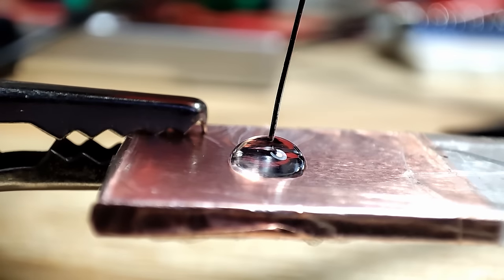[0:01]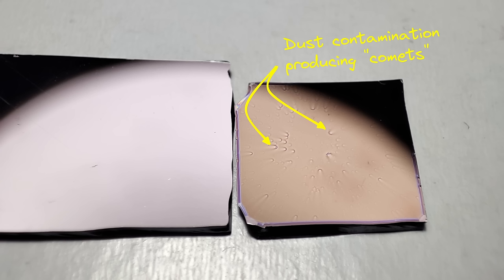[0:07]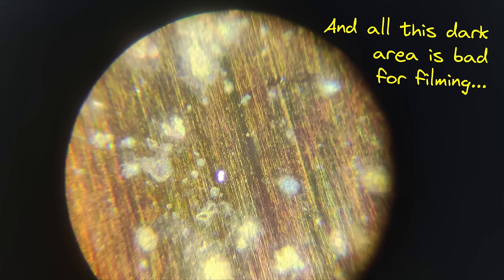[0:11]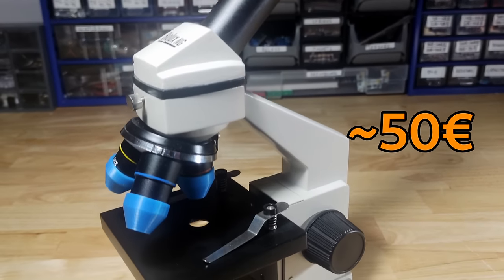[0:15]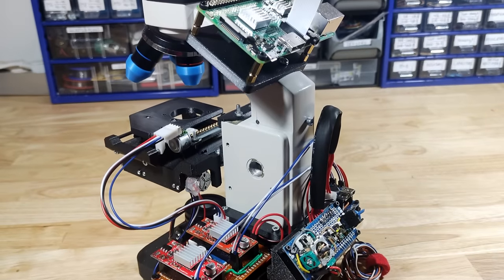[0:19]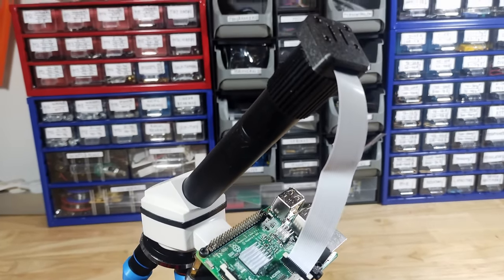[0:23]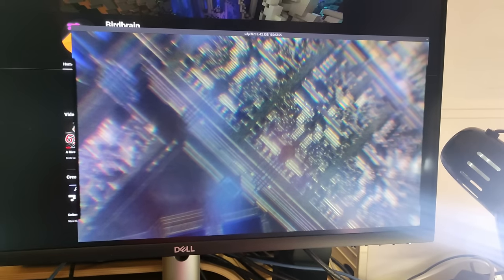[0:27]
While I was recently working on a project to make DIY microfluidic devices, I realized that I needed to make and upgrade some of my tools in the lab. So, in this video, I will be showing you how I turned this old, extremely cheap educational microscope into a DIY upgradable, potentially numerically controllable microscope with a 2K resolution digital camera feed to my PC.
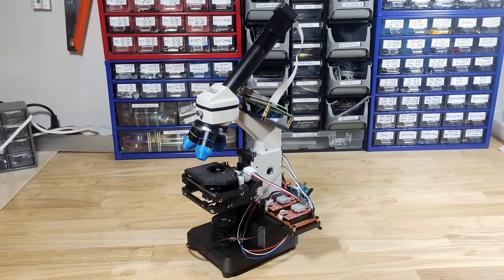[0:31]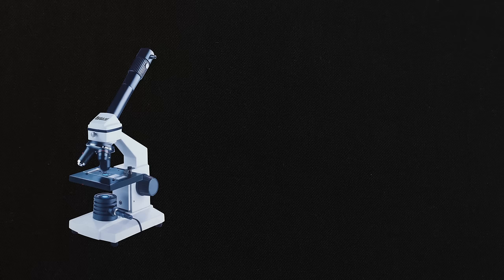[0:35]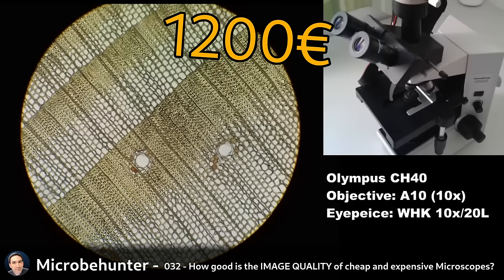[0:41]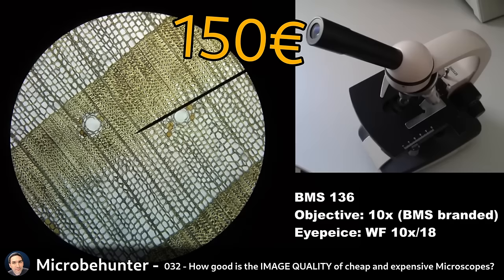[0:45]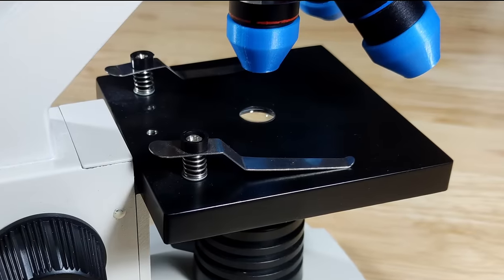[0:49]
Now, it's worth asking whether it's really necessary or beneficial to try to upgrade it. After all, already for many decades, even the cheap educational microscopes are more or less capable of magnifying down to close to the optical limit of about 1000x. In my case though, the problem was the sample stage.
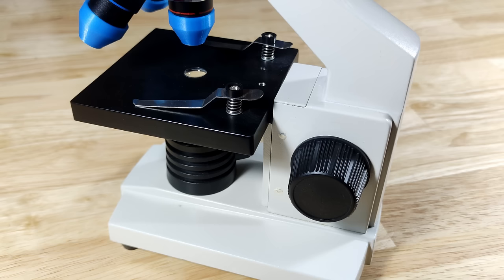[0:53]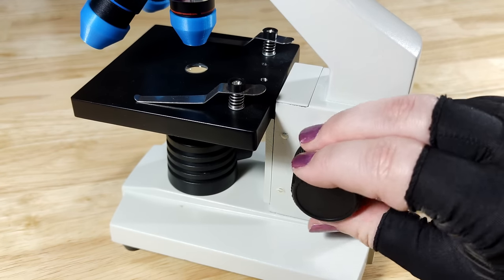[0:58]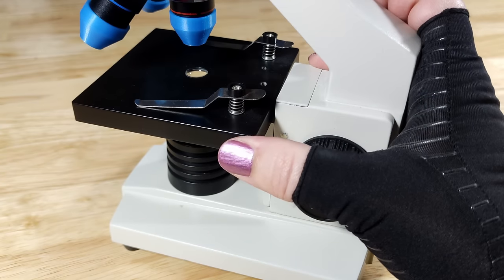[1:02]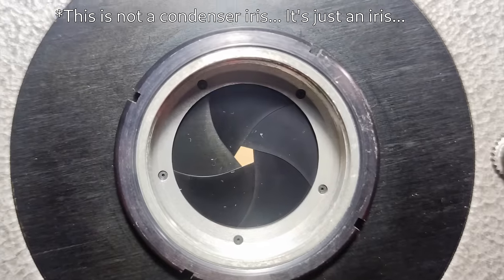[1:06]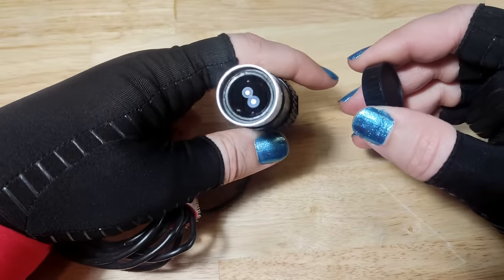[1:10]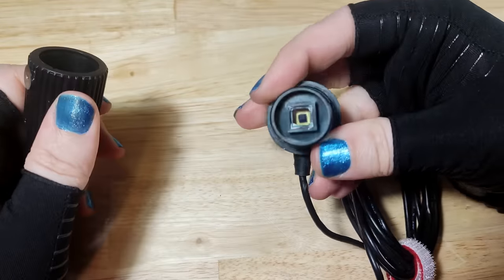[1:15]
It was infuriatingly bad. The Z-axis control only had coarse adjustment with a travel height of only about 2 cm. But worst of all, there was absolutely no X or Y axis control. There was also no condenser iris included, and while there was a camera module, the sensor had a terrible 240p resolution, and the image quality was, in general, shocking. And not in a good way.
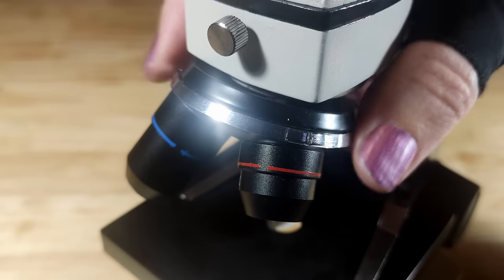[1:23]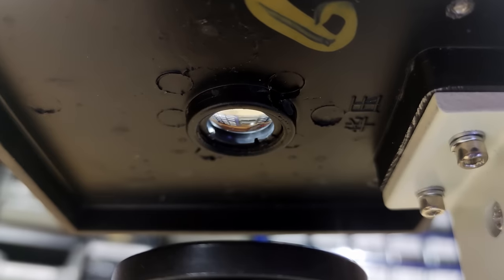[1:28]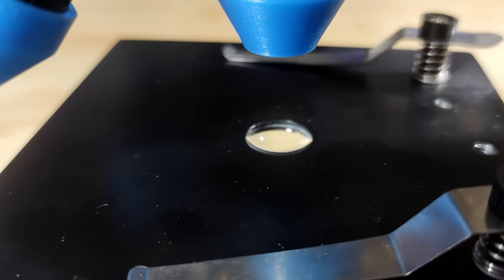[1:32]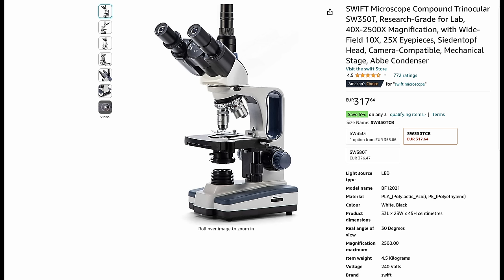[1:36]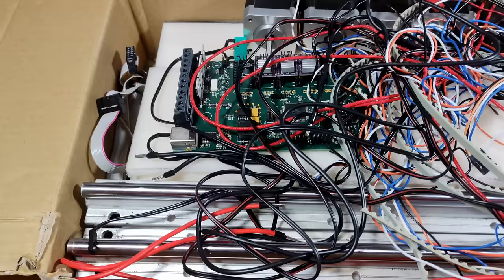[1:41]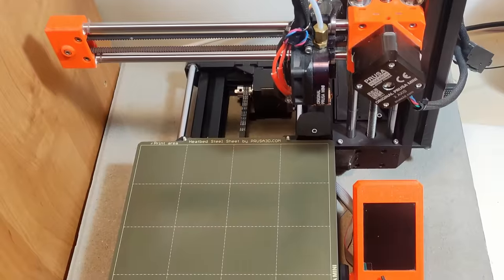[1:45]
At least the microscope had 3 objectives on a carousel and a proper condenser lens, though, as we'll see soon enough, these objectives are also pretty terrible. So, having decided that instead of spending a few hundred euros on a new trinocular microscope, I'd simply use the random junk I have laying about and some 3D printing to upgrade the microscope I already have.
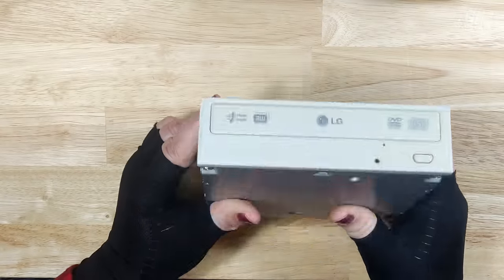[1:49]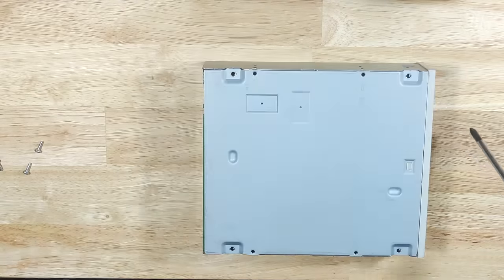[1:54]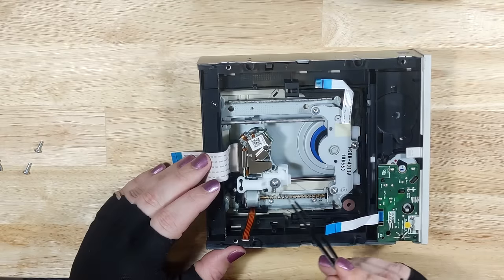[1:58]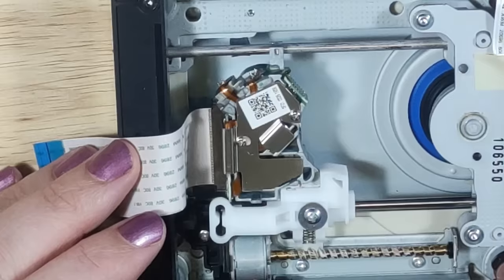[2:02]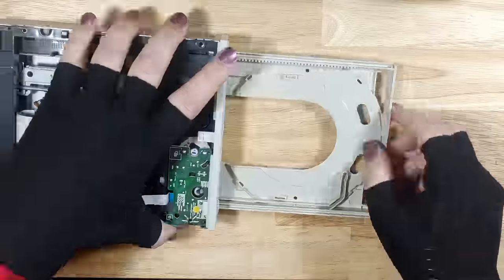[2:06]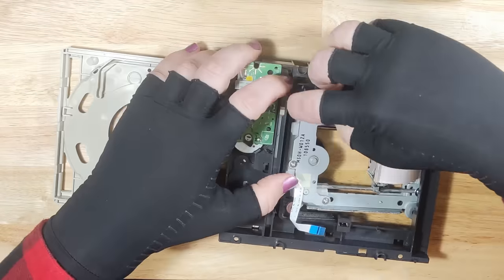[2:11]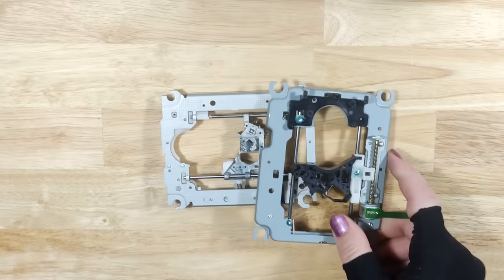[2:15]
I started by opening up an old DVD drive in order to expose a few components I wanted to scavenge. The read head stepper motor, the guide rails, as well as the carriage. I continued disassembling the drive until I was finally able to extract the whole module with all the parts I wanted. I then did exactly the same to a second old DVD drive.
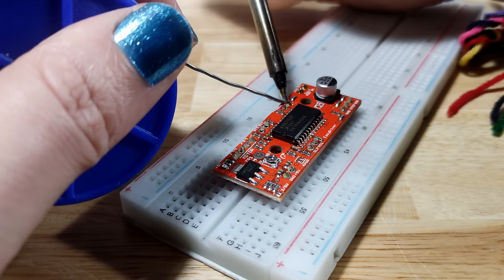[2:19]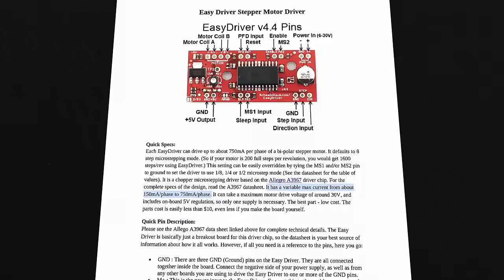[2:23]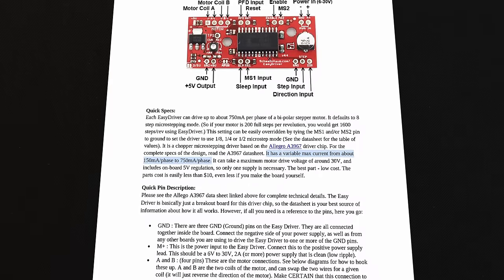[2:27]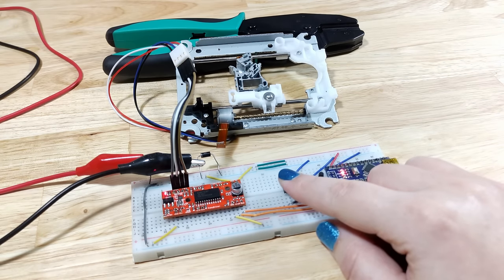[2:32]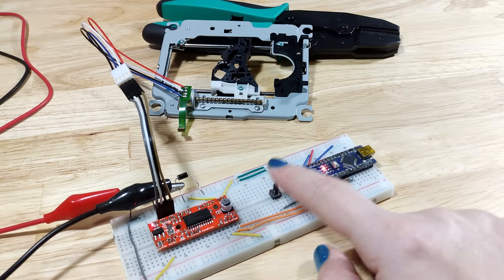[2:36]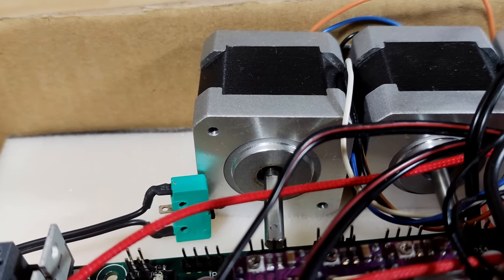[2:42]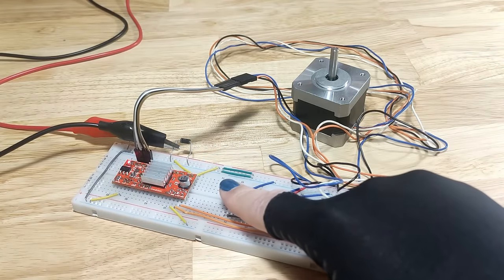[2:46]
Before continuing, I ordered some Easy Driver stepper motor drivers as they allow one to use extremely low current to control the scavenged stepper motors. I then also quickly tested that the drivers and motors actually work, and I was glad to see that both of the scavenged motors worked perfectly. In addition, I tested a NEMA 17 stepper motor I had laying about and wanted to use for the Z-axis. It worked just fine as well.
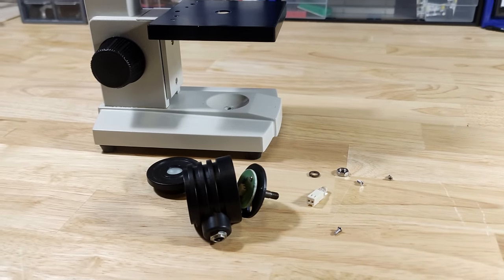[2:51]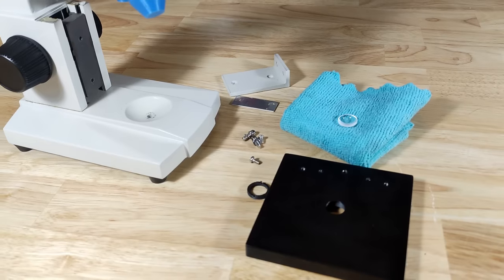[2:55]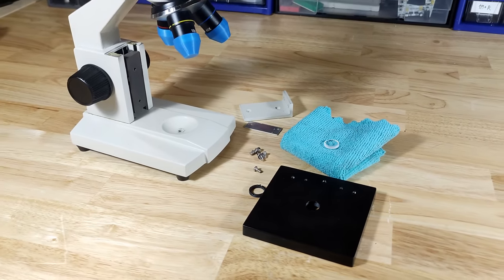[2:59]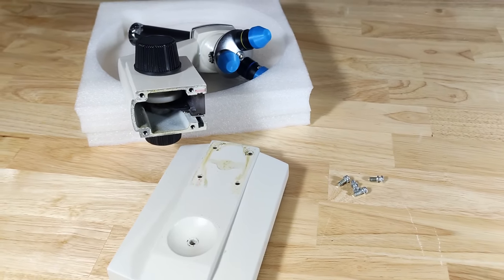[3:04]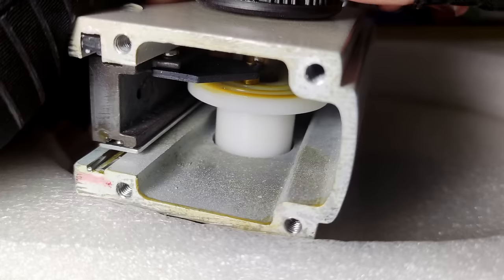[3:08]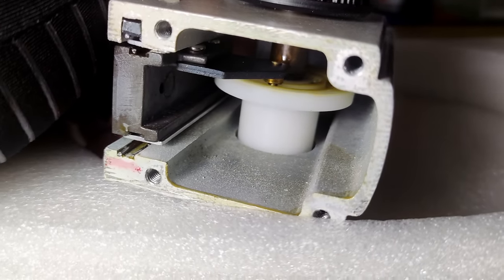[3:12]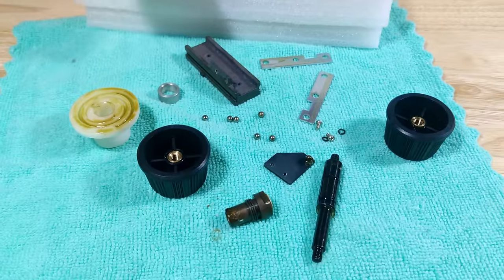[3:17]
Next, it was time to disassemble the microscope. I started with the light fixture and condenser lens, both of which I stored for later use. I then took off the stage and disconnected the body from the base, exposing the Z-axis mechanism. This mechanism, while fairly nice for getting precise movement in a simple package, is rather limited in its travel movement, which was one of the main problems I had with the microscope. So I continued and took apart the whole mechanism.
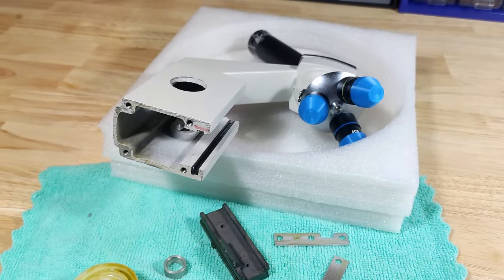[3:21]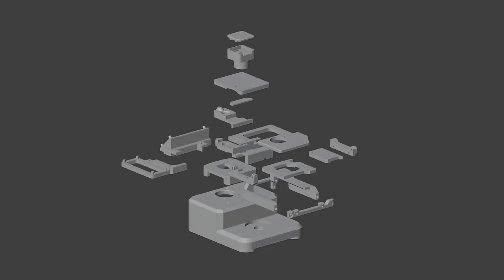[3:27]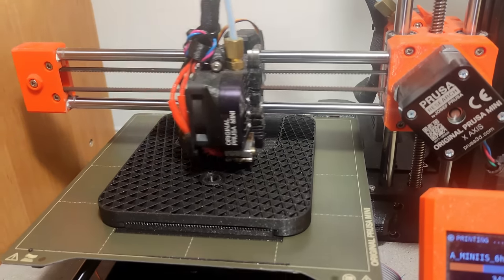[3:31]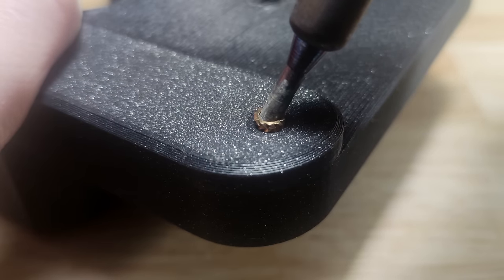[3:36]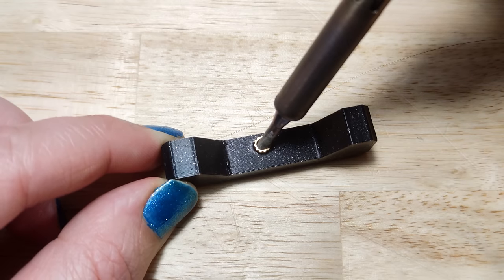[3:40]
At this point, I went on to design how the microscope should look like, work, and what parts needed to be 3D printed. And then, well, I 3D printed the parts. I also designed in the use of some heatset inserts for tighter bonding between the parts, as rigidity is quite crucial for a good functioning stepper stage.
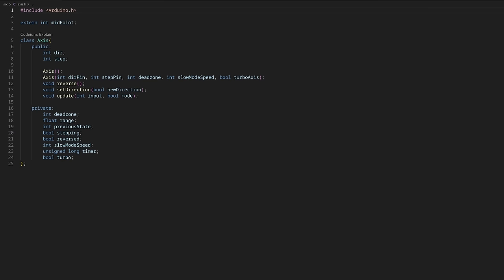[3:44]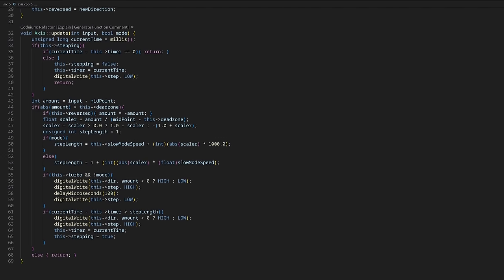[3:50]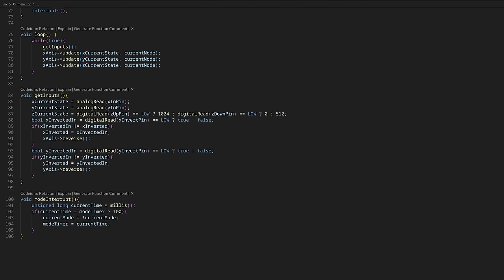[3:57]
Speaking of function, I then wrote some code for an Arduino Nano to be able to actually control the different stepper motors. I spent maybe 2 or 3 hours on this code, so please don't look at it, it's ugly, but it is available on my GitHub.
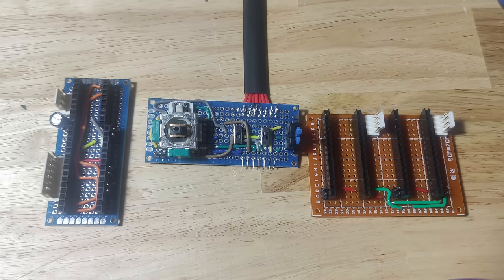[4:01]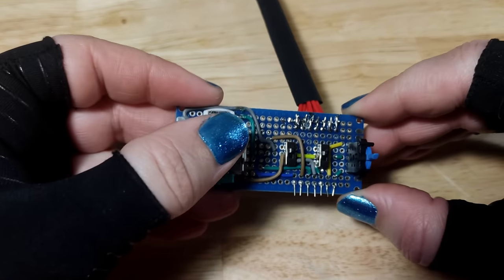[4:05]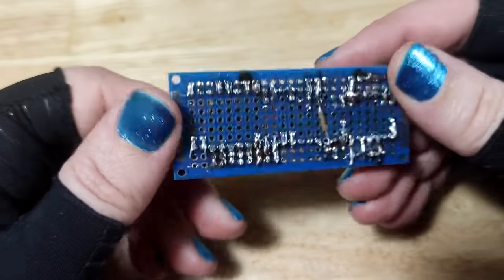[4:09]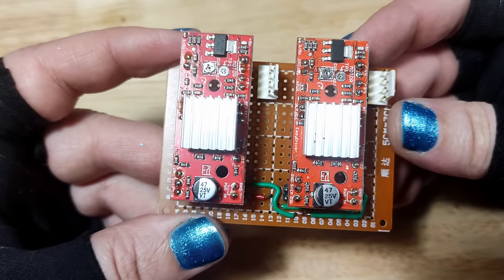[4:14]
I then spent some time soldering up these pieces of horror. A control panel, microcontroller board with the Z-axis driver, and the X and Y axis drivers. At least this time, the device's schematic is rather simple.
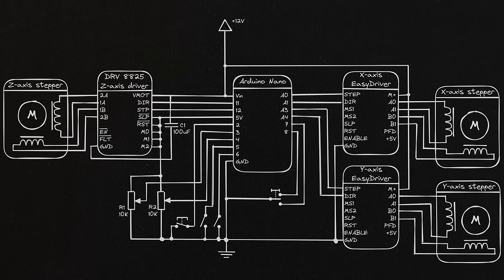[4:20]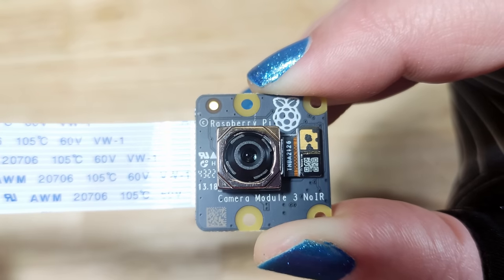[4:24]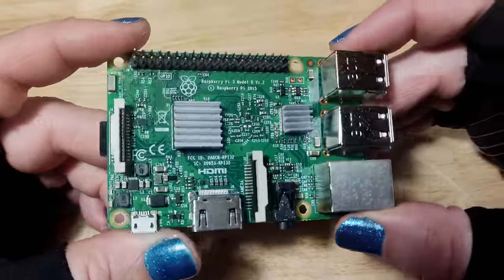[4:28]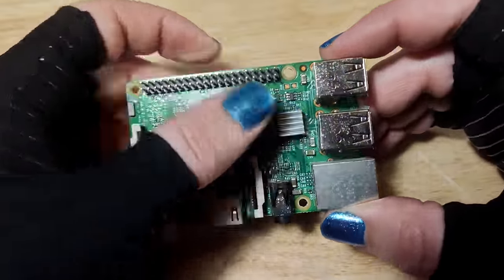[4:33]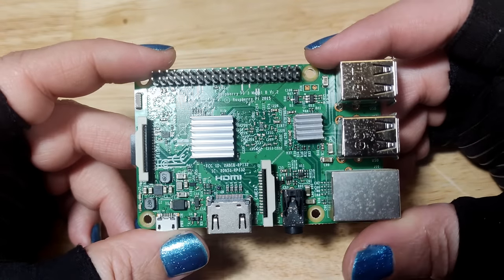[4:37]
Earlier, I also alluded to adding a 2K digital camera, and for that purpose, I got myself this Raspberry Pi Cam 3, which I drive through a Raspberry Pi. The Raspberry Pi also serves to broadcast the image on the local network so that it would be possible to tune in from my PC.
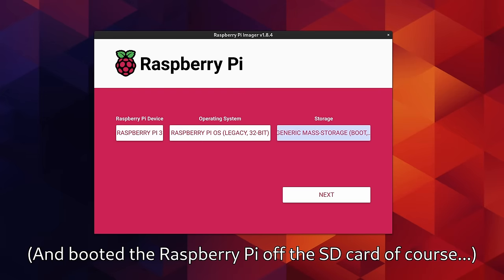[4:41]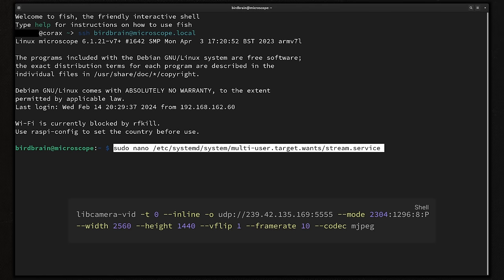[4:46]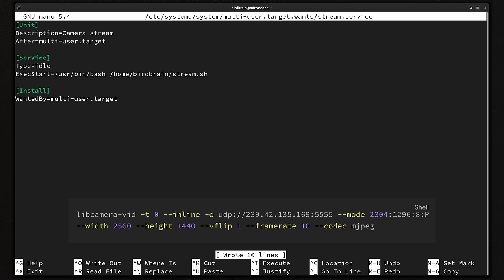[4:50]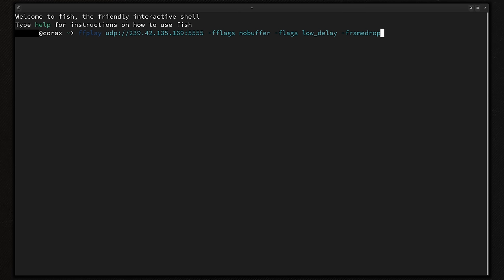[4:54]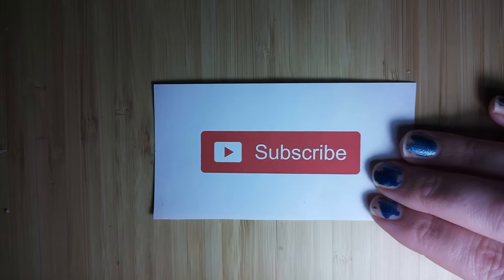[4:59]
To do that, I first installed Raspbian on an SD card. I then made the systemd unit to run the command shown on the screen after booting. So now, as long as the microscope and my PC are on the same local network, I can run this command in a terminal on my PC and it will open up the video stream from the camera.
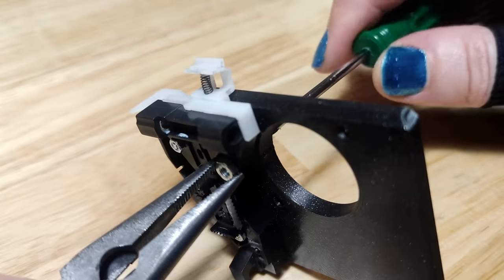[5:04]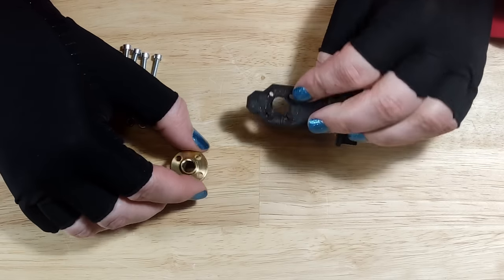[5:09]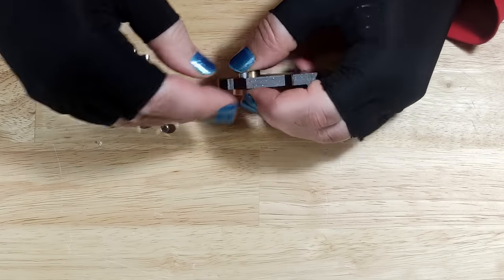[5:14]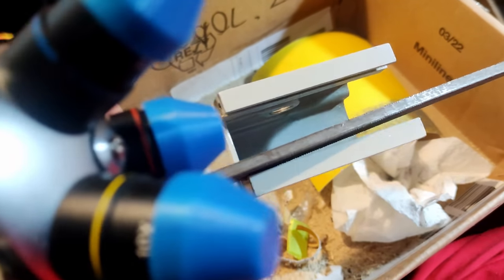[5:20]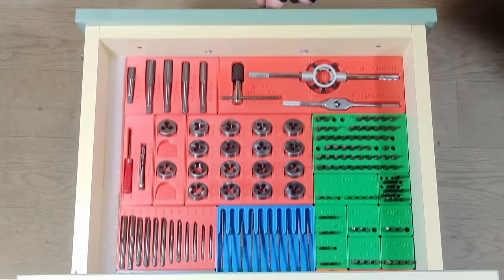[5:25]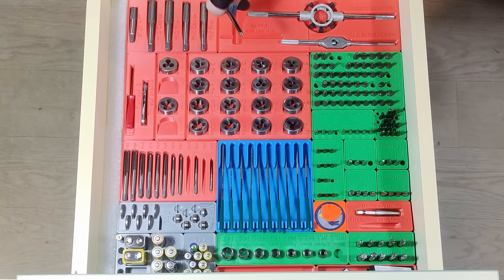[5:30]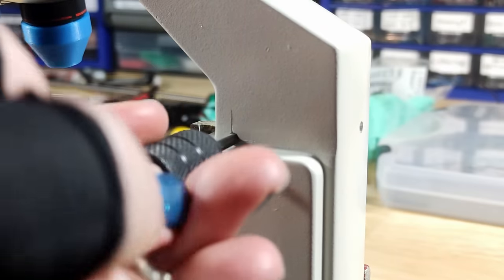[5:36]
At this point, I made some more pre-assembly preparations. I joined some parts. Filed away some excessive metal on the microscope body, as well as drilled and tapped some holes into the microscope body to hold on to some structural pieces. And finally, I also had to cut the lead screw I had to size as well.
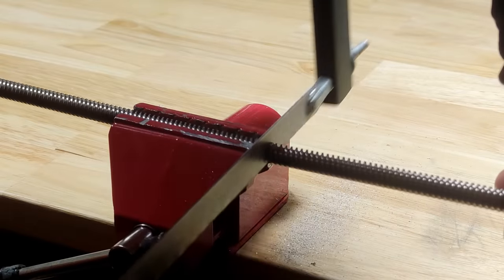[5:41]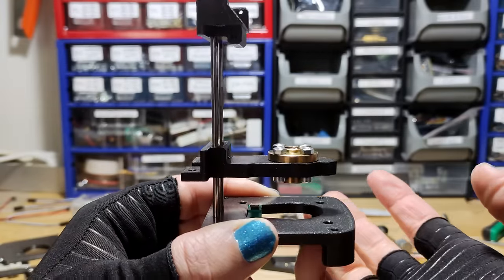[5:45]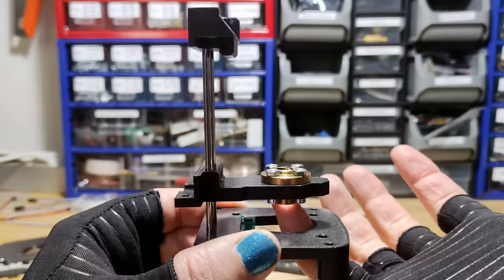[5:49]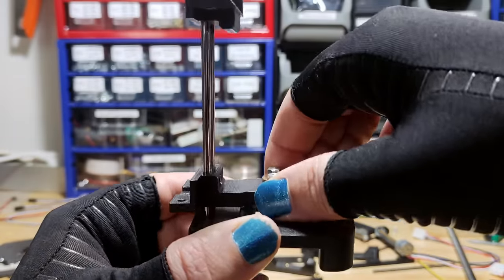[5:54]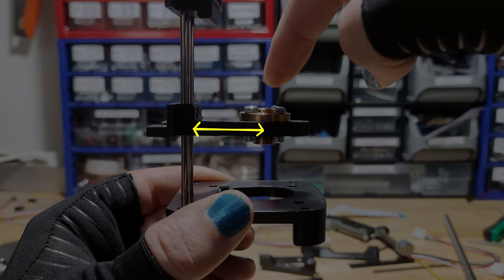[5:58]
At this point, I figured I'd test out how well the Z-axis would work. And, yeah, this is a problem. The Z-axis really did not work. See, I had hoped that the Z-axis guide rails were close enough to the lead screw so that any torque generated on the Z-axis carriage by the lead screw would not really be an issue. I was obviously wrong, though.
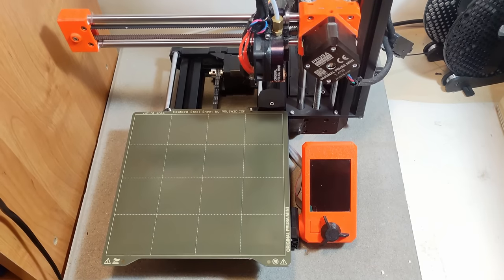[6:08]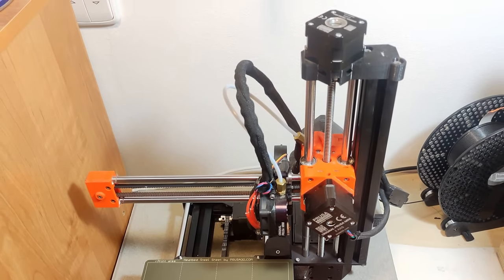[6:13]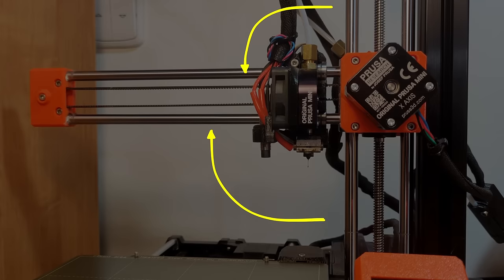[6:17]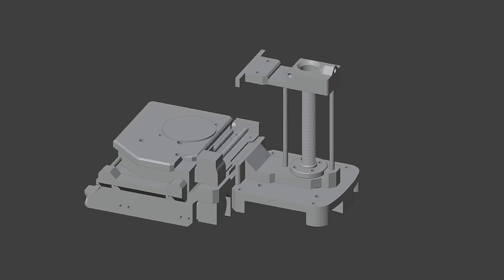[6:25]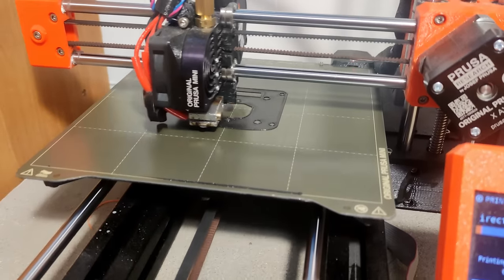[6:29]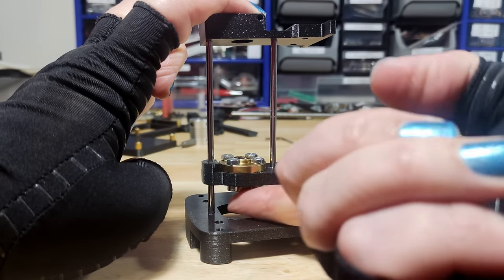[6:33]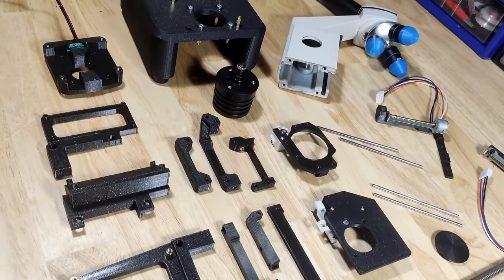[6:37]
So, I did what I should have done from the beginning and looked at my 3D printer to see how it's done properly. As you can see here, the lead screw and the guide rails are in line with the axis of highest torque. In addition, the lead screw is in between the guide rails. So, I transferred this design to my microscope's design, reprinted some stuff, and this time the design seemed to work just fine. Now, I was finally ready to start assembling the microscope.
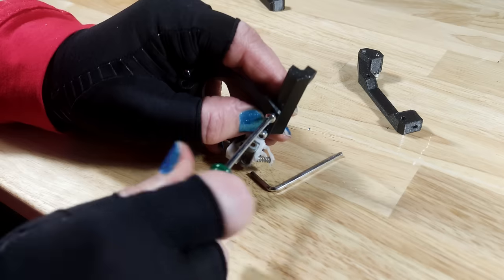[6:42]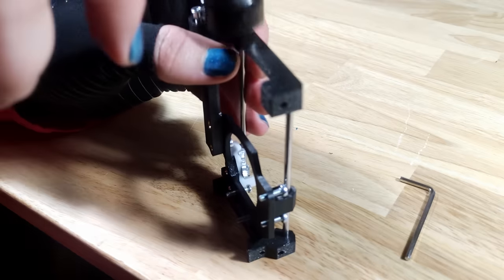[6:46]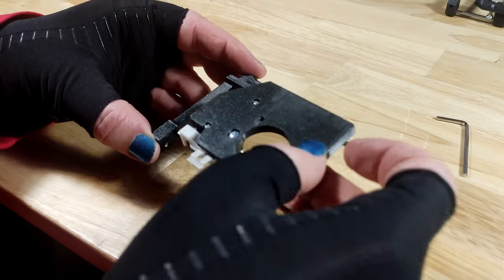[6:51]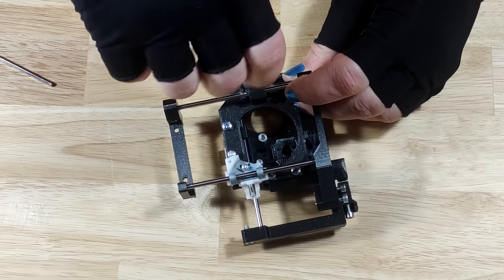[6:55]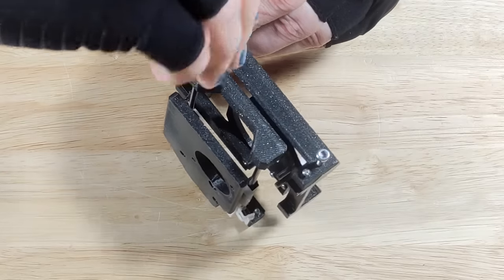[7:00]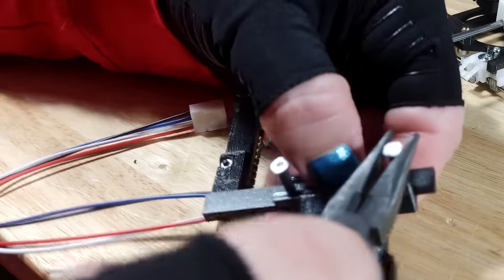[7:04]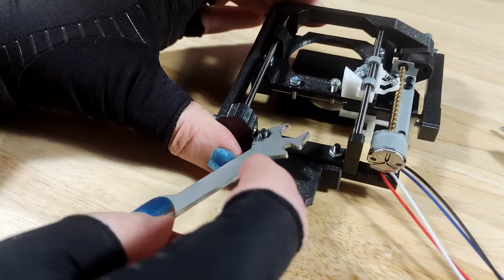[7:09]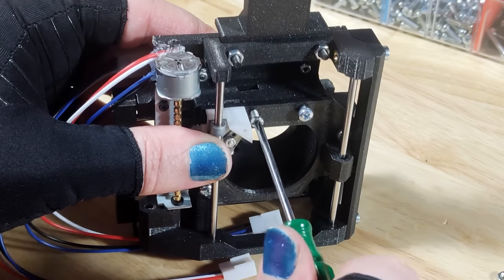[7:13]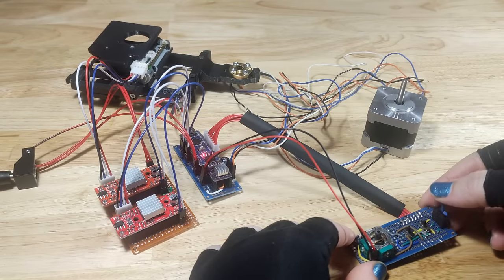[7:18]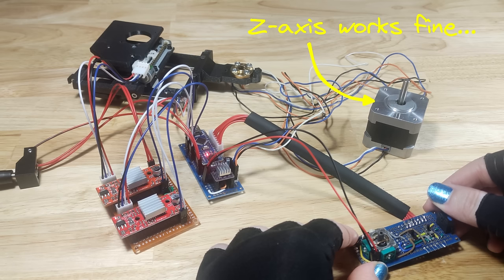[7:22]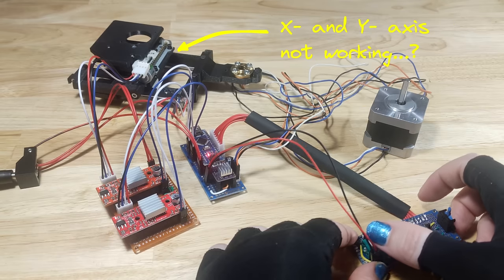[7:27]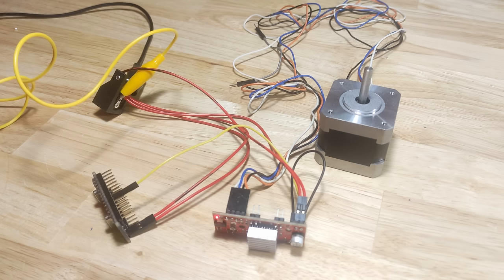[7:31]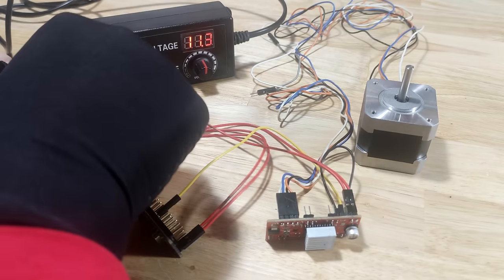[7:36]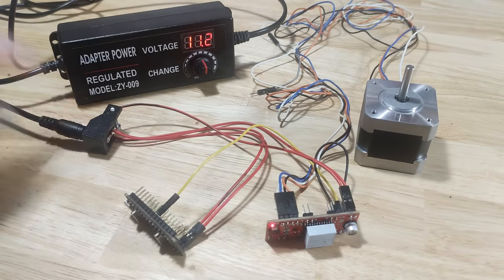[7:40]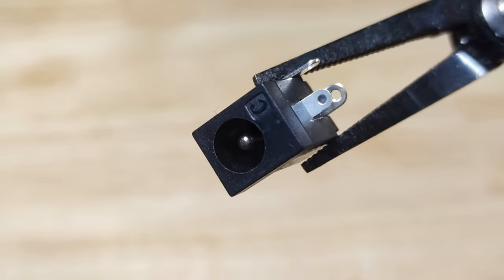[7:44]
Once I had assembled the XY stage module, I decided to do a sort of integration test. And for some reason, the stepper motors had stopped working. The Z-axis was working normally, but neither the X or Y axis would move when commanded to. First, I did verify that the controllers were still good, except that then suddenly out of nowhere, on another test, everything stopped working again. In the end, I figured it out and the solution was rather easy but annoying.
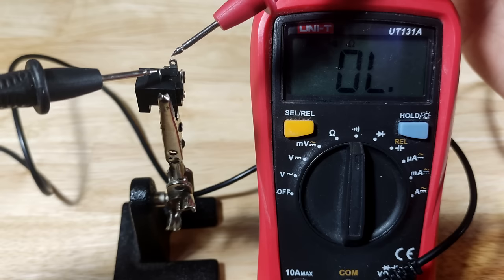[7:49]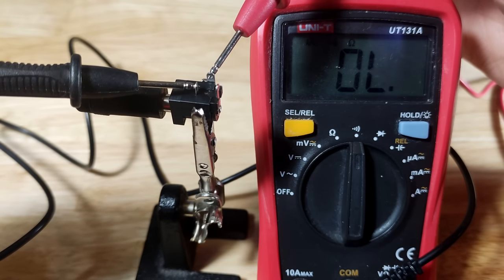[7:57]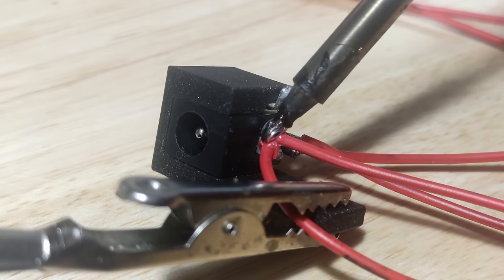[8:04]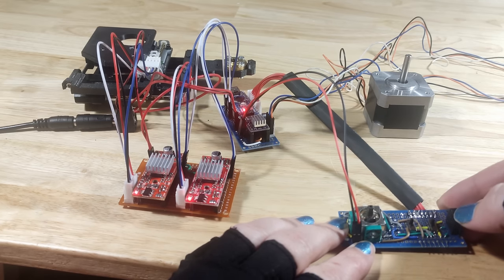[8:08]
See, these power connectors have three pins, and at first, two of them seem to be ground. Except that one of them is actually a normally closed switch. So, when I plugged in the power connector, it actually disconnected one of the grounds. The fix was to just resolder the connector. And once I did that, all the steppers started working again.
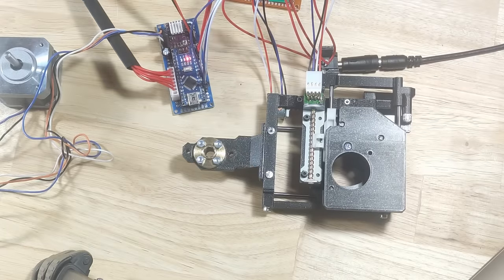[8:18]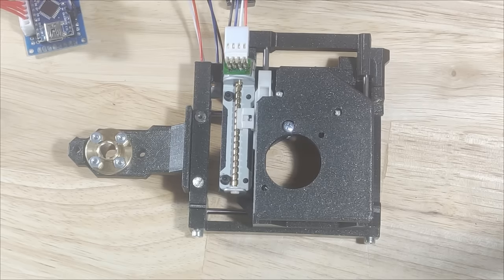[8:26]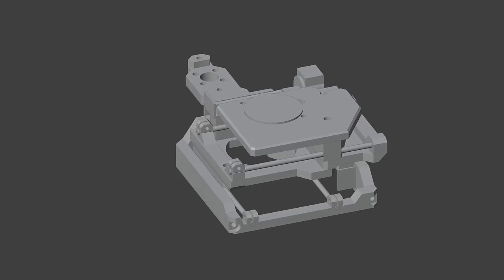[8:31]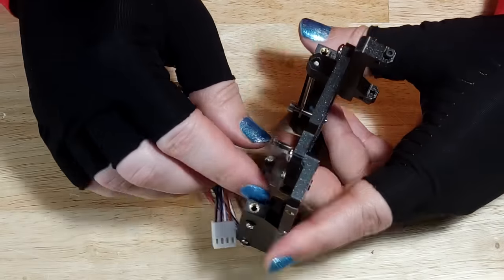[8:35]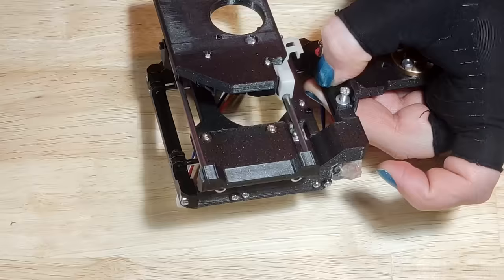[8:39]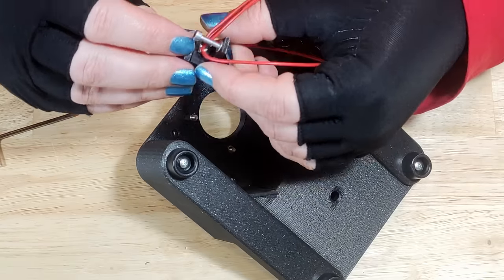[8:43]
What didn't work out, though, was the whole freaking stage. See how it jumps? Yeah, I'm just stupid and had designed the stage poorly. And so it was binding on itself. So, after redesigning, reprinting, and reassembling the stage, there was nothing more left to do than to just finish assembling the whole microscope.
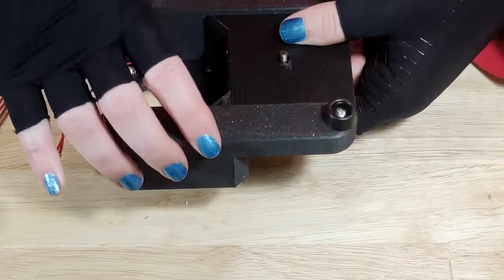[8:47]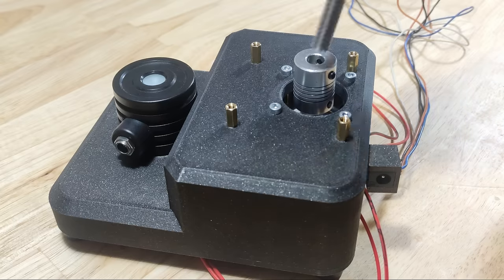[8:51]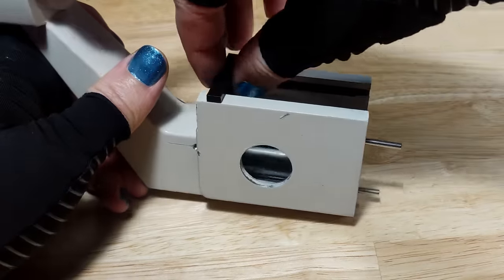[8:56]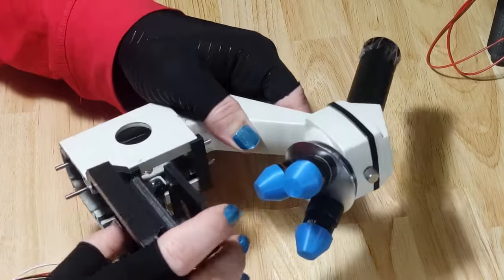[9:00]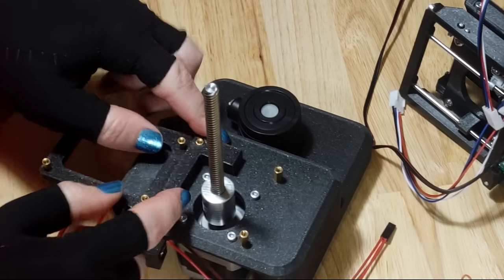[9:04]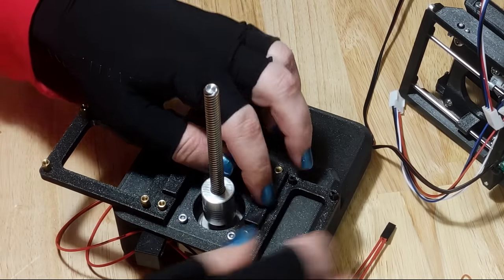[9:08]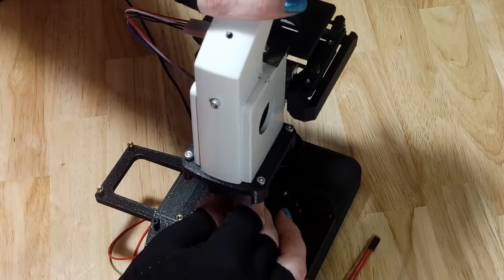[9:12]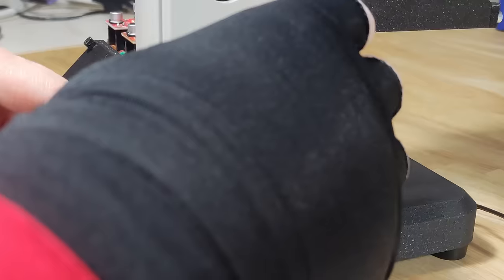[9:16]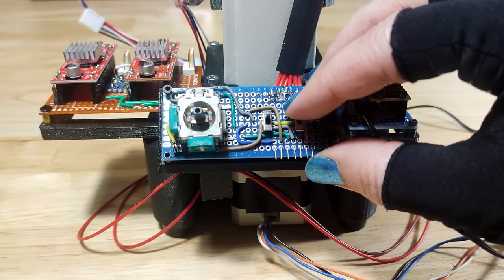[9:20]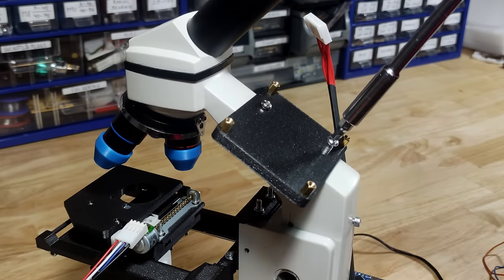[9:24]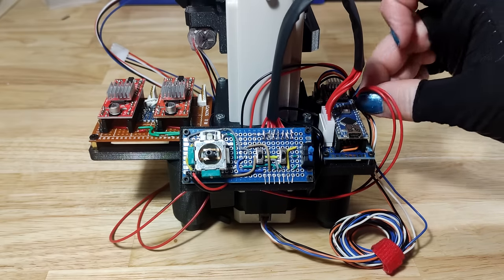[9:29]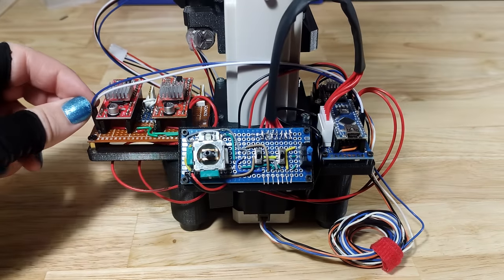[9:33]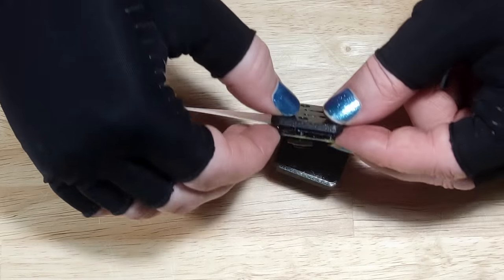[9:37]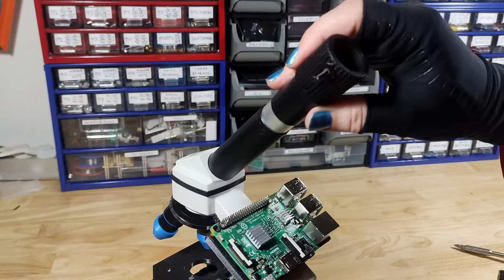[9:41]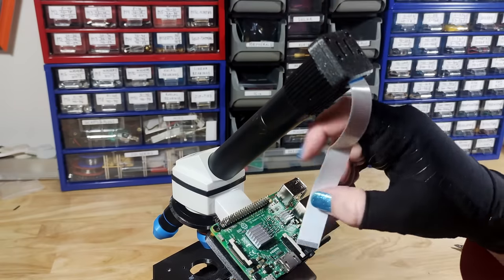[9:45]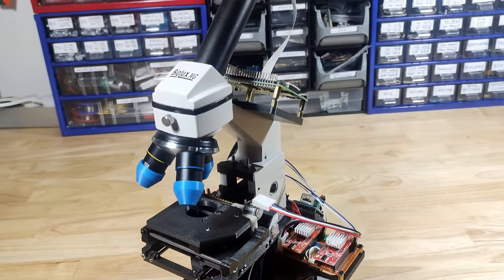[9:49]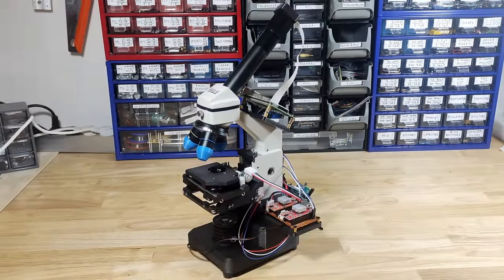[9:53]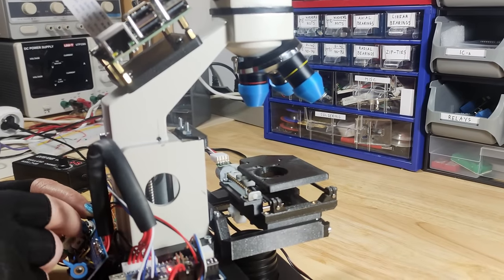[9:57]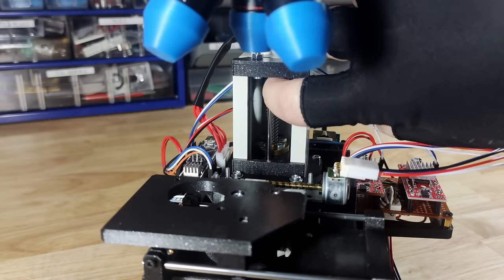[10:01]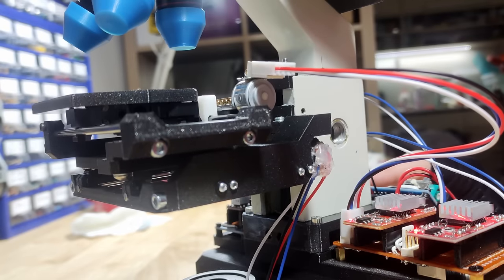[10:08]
Eventually, I was left with this super DIY looking microscope. I quickly did some testing and it was apparent that the axes needed lubrication, as was expected. So I used some high purity PTFE grease on every surface where sliding occurs, which helped a lot, and now the whole stepper stage works great.
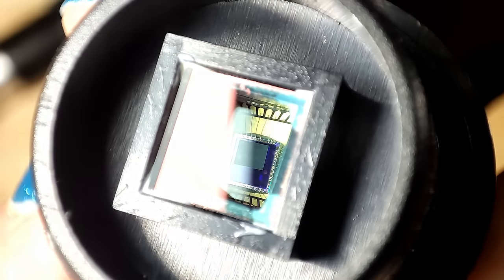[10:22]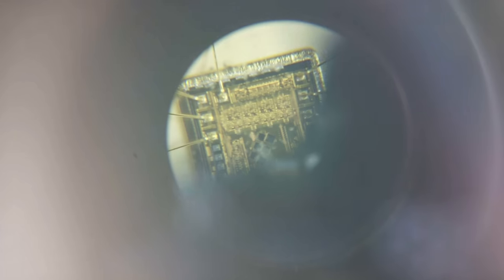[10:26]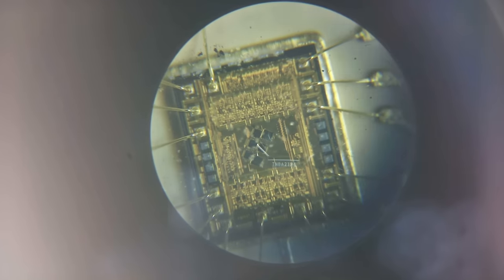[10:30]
Next, I of course immediately set up the microscope to view something, only to find that I could not see anything through the camera. I suspected that this would happen though, as the original camera had no lens on it. While I could have used the camera with a normal eyepiece, I did not like that solution, because it makes large portions of the image sensor useless.
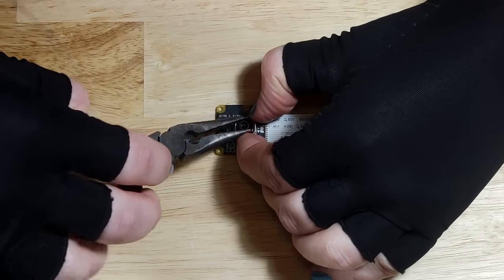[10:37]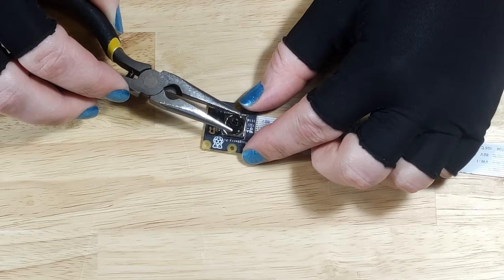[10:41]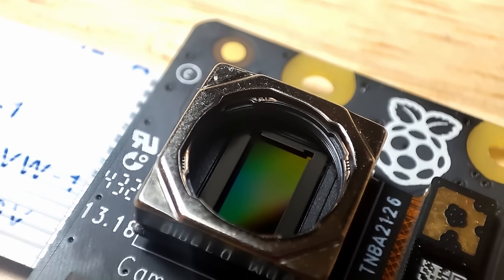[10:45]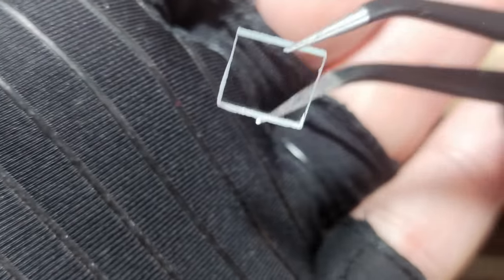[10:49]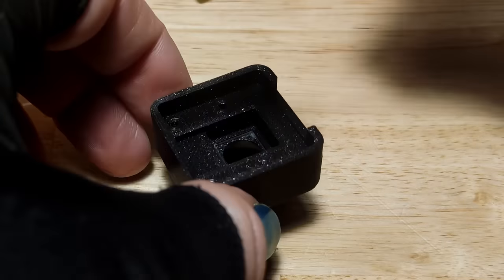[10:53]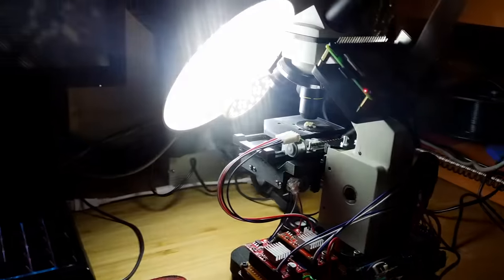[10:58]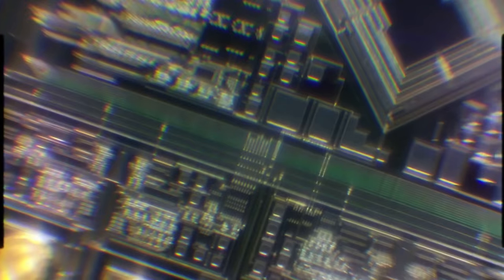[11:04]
So instead, I removed the lens from the camera, exposing the image sensor underneath directly, to prevent any dust from getting onto the sensor, which would ruin parts of the image. I also installed a protective glass to the camera structure, and then made sure to tightly close the camera compartment. Doing all of this did indeed do the trick. The microscope was now functional, and I could make the first observations.
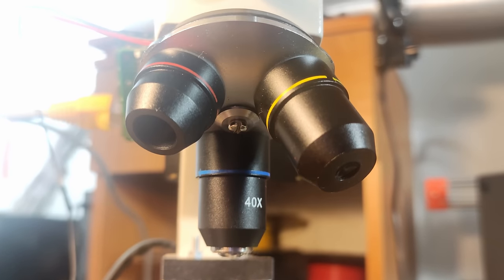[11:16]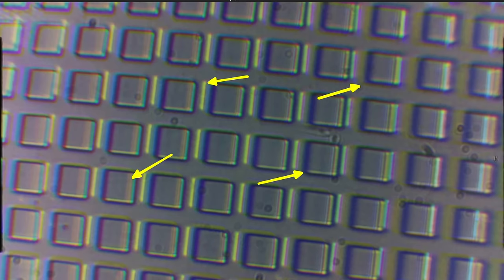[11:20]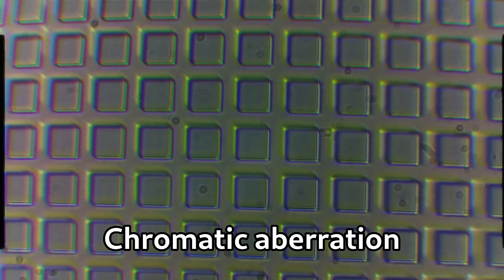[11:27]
Unfortunately, I immediately noticed a couple problems. Firstly, the edges of the image are somewhat radially blurred. That's due to the poor objective quality, and there's nothing I can really do about it. However, there's also these colors in places where they should not be. This effect is called chromatic aberration, and while the achromatic objectives I have are expected to produce this effect, it should not be quite as strong as it is.
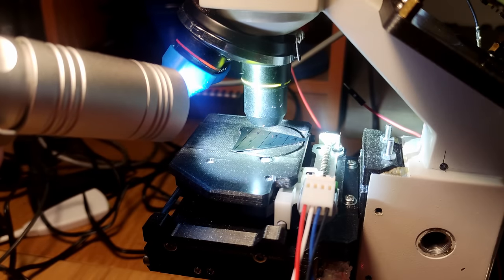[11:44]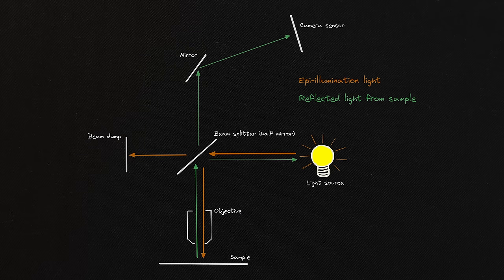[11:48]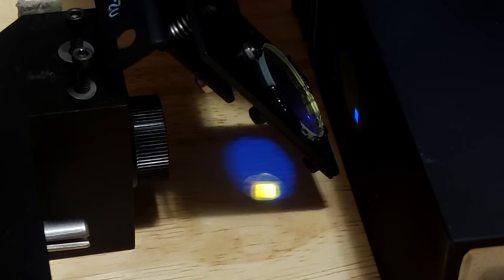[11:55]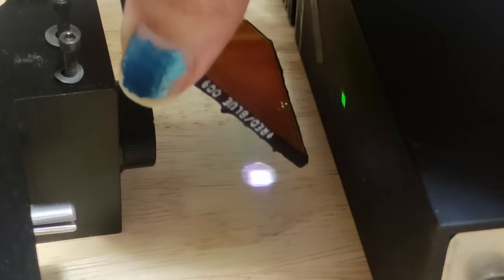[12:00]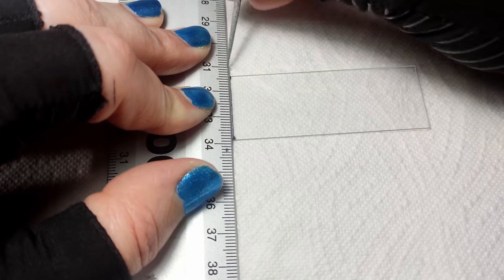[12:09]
I speculated that one reason for it may be the way I am lighting the sample, which for now consisted of shining a high-power flashlight onto the sample from the side. So instead, I figured I'd try to make a proper epi-illumination setup with a beam splitter. While I do have some beam splitters, they all appear to be either dichroic or filtered in some way, so not suitable for the microscope. Fortunately, just simple glass can be used as a high transmittance beam splitter, so that's what I used.
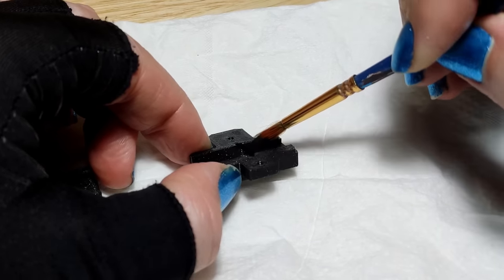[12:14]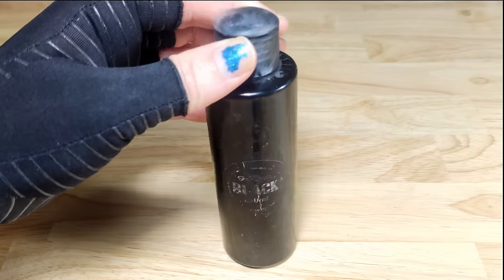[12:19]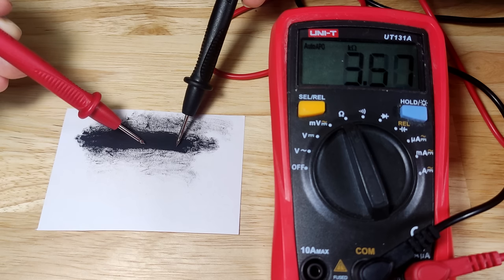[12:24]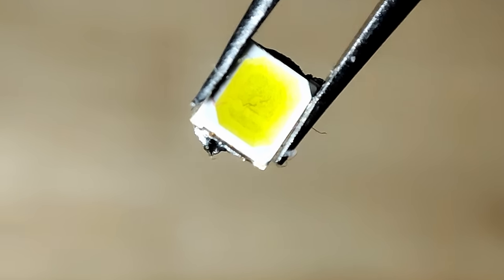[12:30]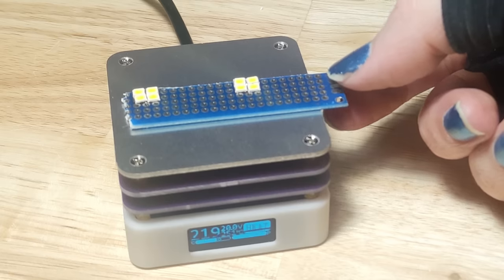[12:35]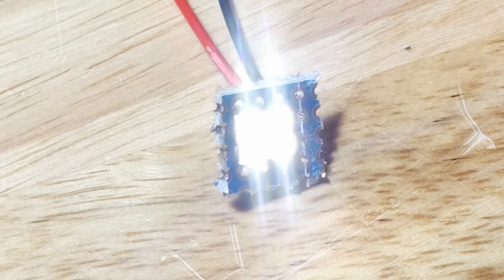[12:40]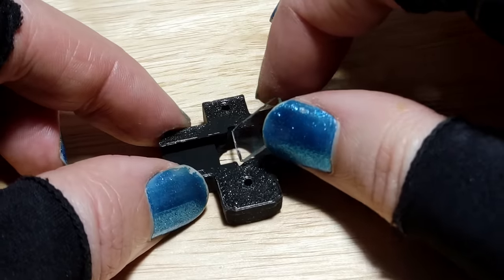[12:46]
To prevent as much scattered light from the transmitted light as possible, I used Black 3.0 acrylic paint to cover any reflecting surfaces inside the beam splitter optical tray. Be careful when using this paint though, it is electrically conductive as I learned. As the light source, I used some 2.7 volt COB LEDs that I scavenged from a broken lamp. Using a mini hot plate, I managed to solder four of them in series onto a prototyping board, which I could then power through a current limiting resistor from the 12 volt supply. I then assembled and installed the epi-illumination assembly.
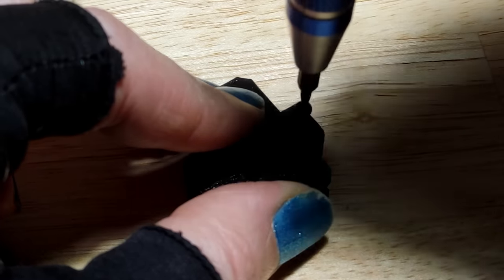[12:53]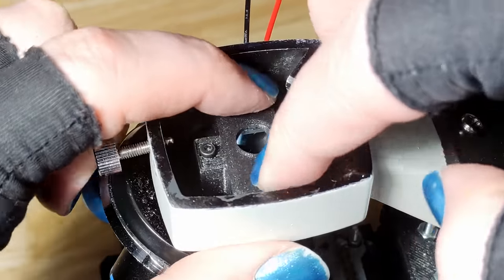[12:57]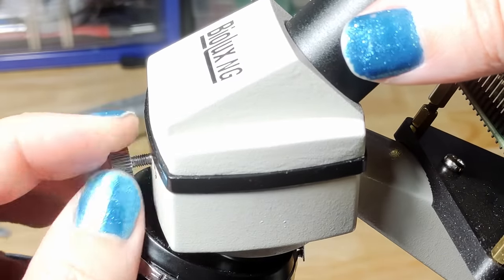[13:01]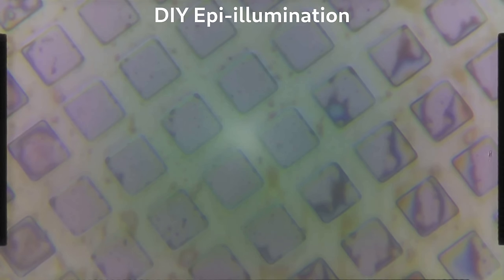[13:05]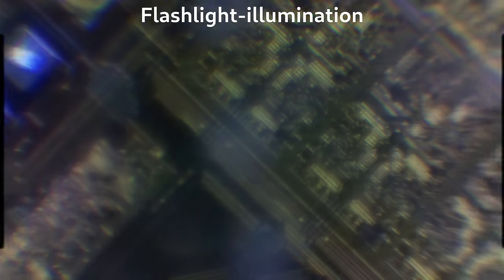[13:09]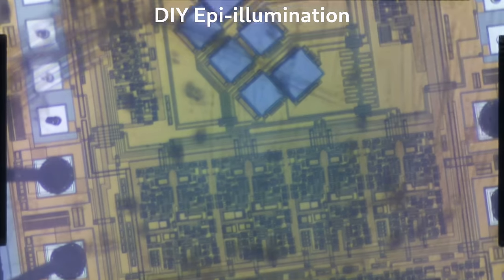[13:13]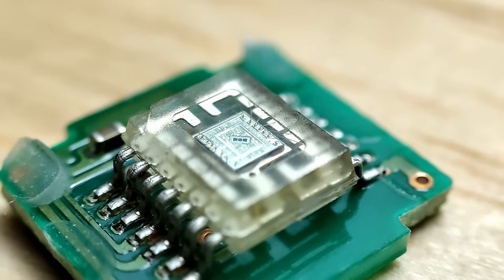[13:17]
And at this point, I'll let the results speak for themselves. Though there's still some contrast issues, I think the new lighting setup is heaps better.
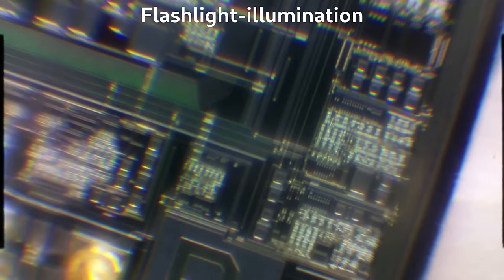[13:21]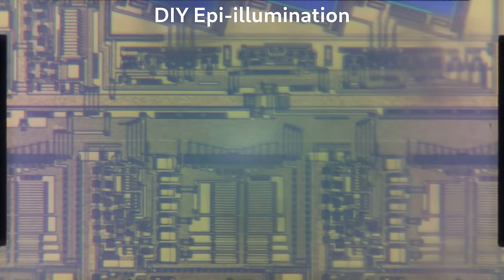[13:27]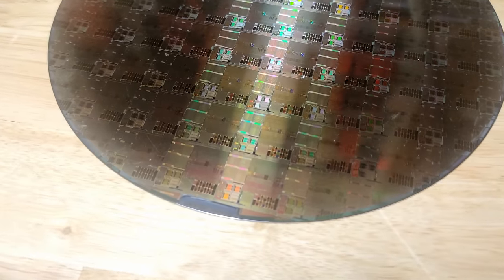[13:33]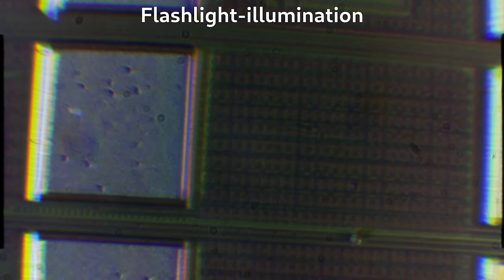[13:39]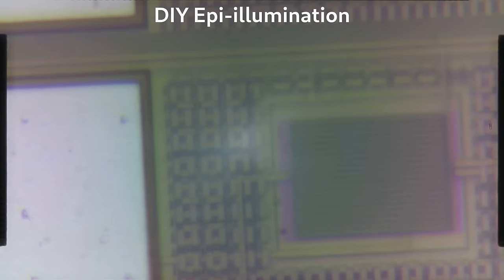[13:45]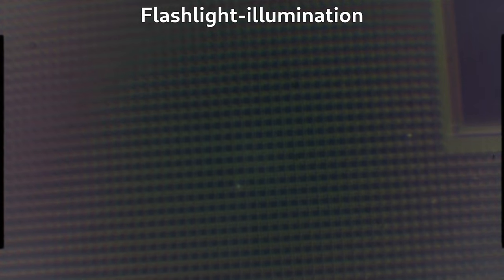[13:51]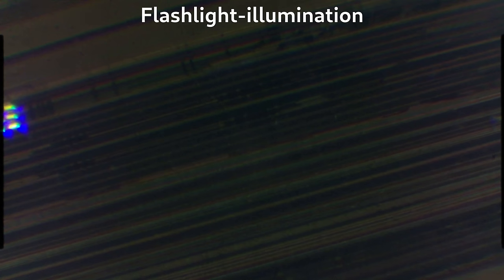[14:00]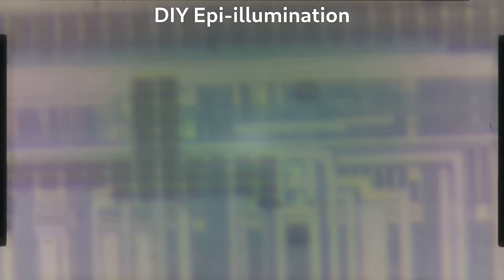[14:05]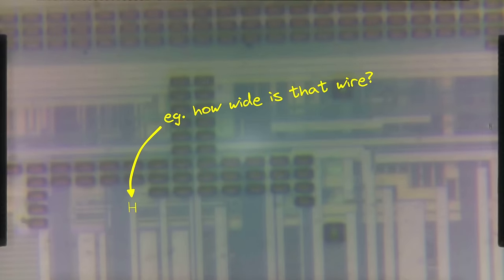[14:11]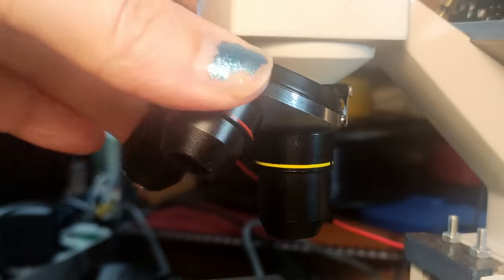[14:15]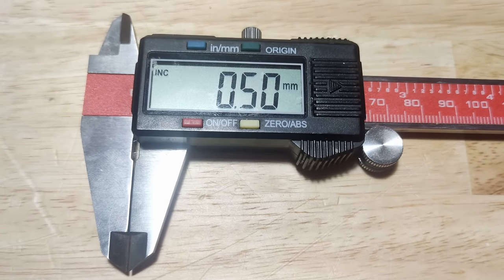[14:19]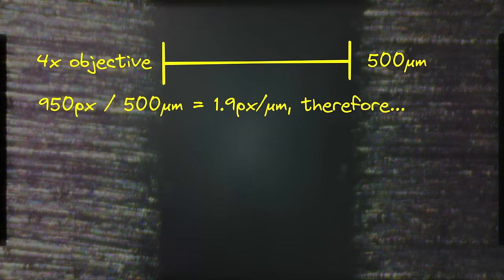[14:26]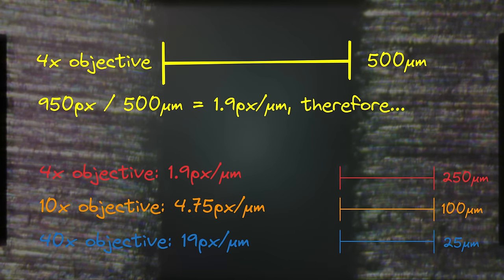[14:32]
Looking at small things under the microscope is fun and all, but oftentimes it's necessary to know the size of the thing you're looking at. So to figure out the scale of things, I set the microscope to the lowest magnification and set my digital calipers to 0.5 millimeters or 500 micrometers. This also allows me to extrapolate the scale for all other magnifications, and while it's not the most precise method to figure out the scale, it will do for now.
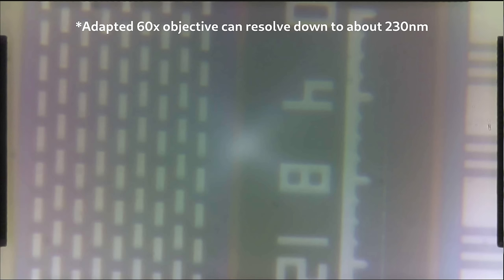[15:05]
I also ended up finding this feature on an IC, which easily allows me to determine the smallest feature this microscope can resolve. At the number 20, the width of the thin line was around 550 nanometers. And because number 12 seems to be the smallest continuously resolvable line width, then it would appear that the microscope can see things as small as about 320 nanometers. Which is okay. Just okay.
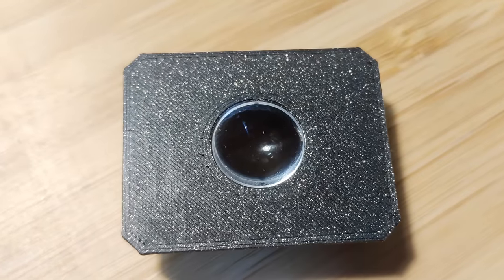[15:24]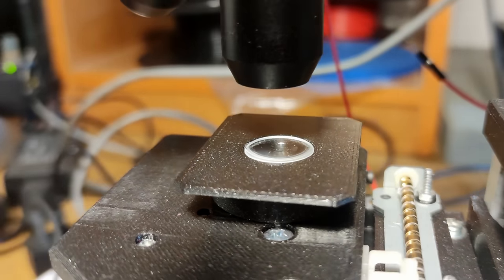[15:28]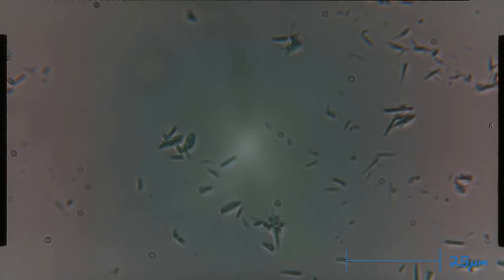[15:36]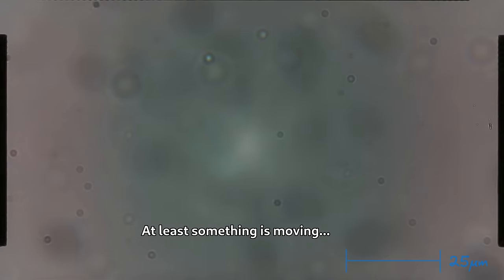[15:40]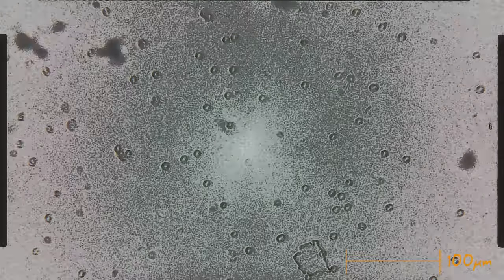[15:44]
Well, I will be using the microscope mainly for reflected light microscopy. By adding back the condenser lens, it's possible to also do transmitted light microscopy. Like with this onion example. Or these microorganisms from some pond water. And my blood.